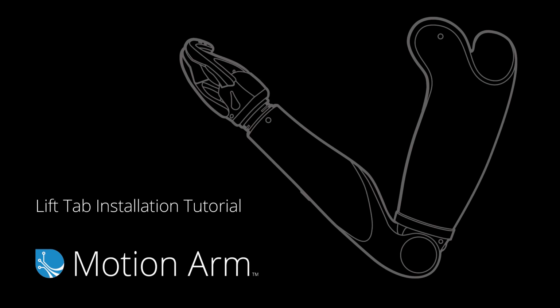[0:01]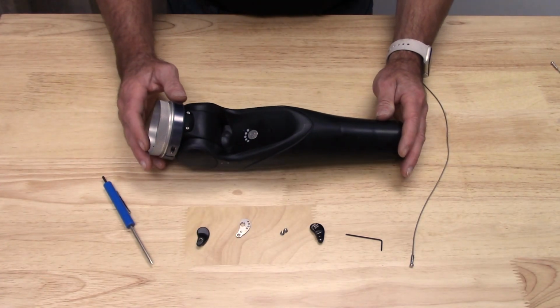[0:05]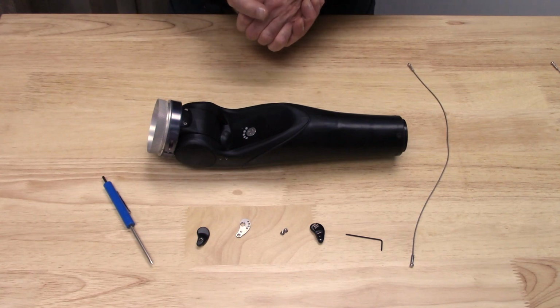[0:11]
Now I'm going to demonstrate installing the lift tab kit onto the motion arm. Just like the elbows, when you get the lift tab kit, it's going to be ready to go for left or right elbows, and that will determine which cover you use.
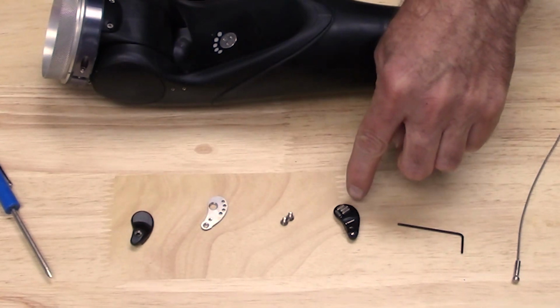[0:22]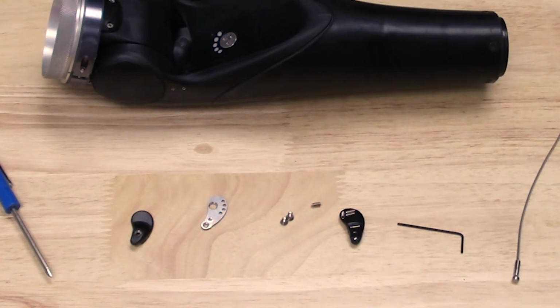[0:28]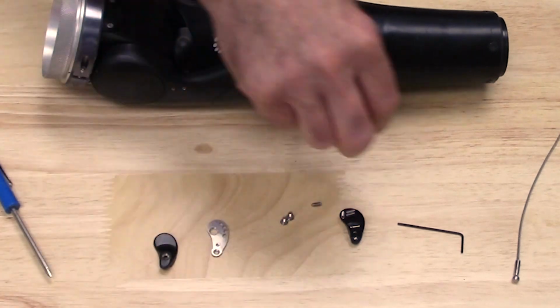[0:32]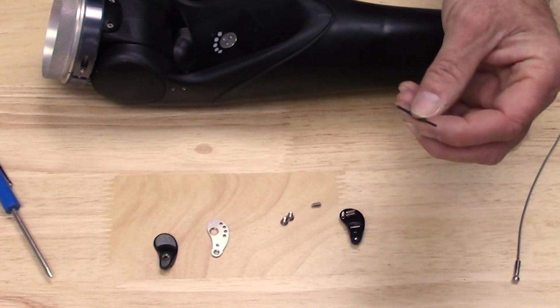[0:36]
In the kit, there's going to be five of these little set screws. There's going to be two Phillips head screws. And then you're going to have the rest of the lift tab assembly here. It's also going to come with the installation wrench for those set screws.
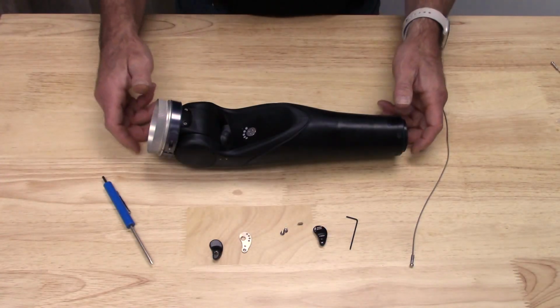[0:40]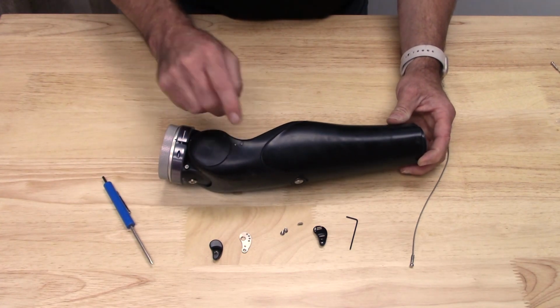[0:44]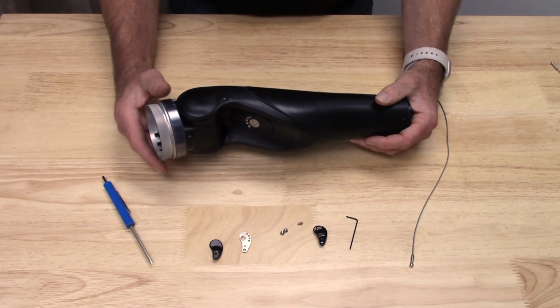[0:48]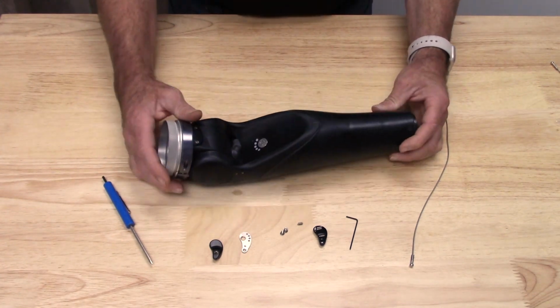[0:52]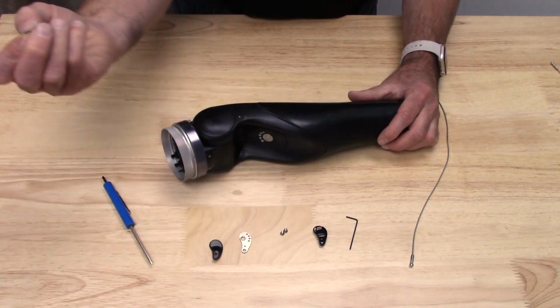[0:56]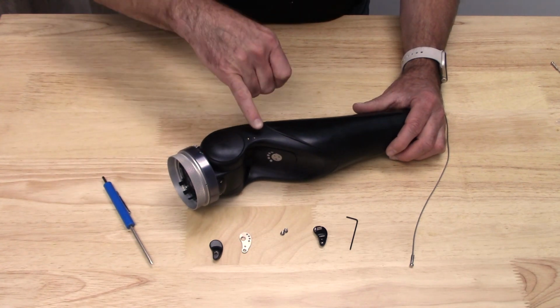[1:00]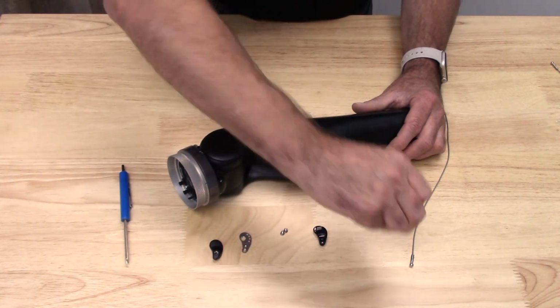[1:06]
If you look at the motion arm, you see two holes on the left, two holes on the right. Today we are going to set this up as a left motion arm. First thing I'm going to do is take one of my set screws, and I'm just going to set it right here on the left side of that elbow. I'm going to grab my little wrench.
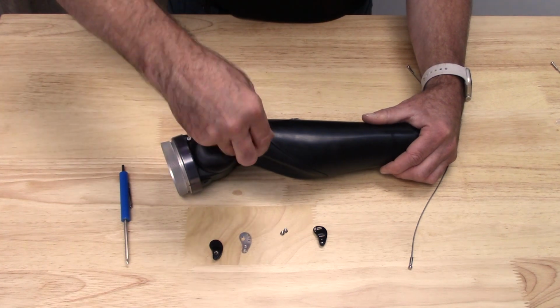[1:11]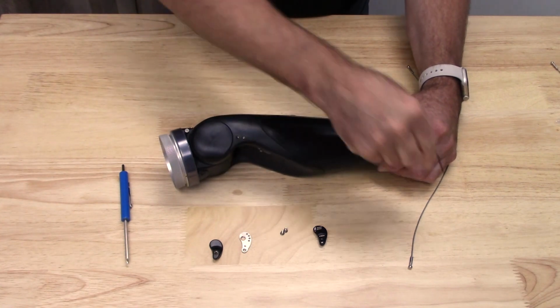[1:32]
And I'm simply going to turn this screw in, again clockwise. What I want to do here is take this completely flush with the outer portion of that elbow. Okay, so I've got that nice and flush. So it's definitely below that surface.
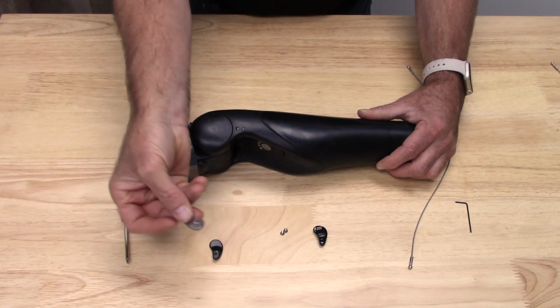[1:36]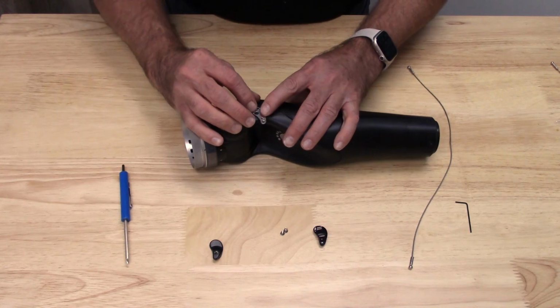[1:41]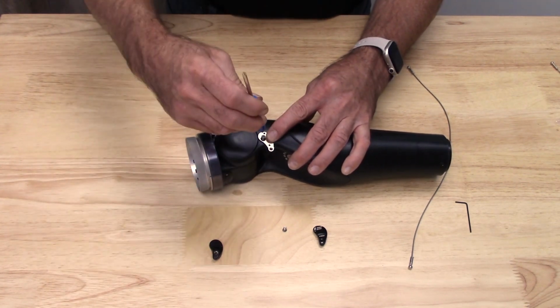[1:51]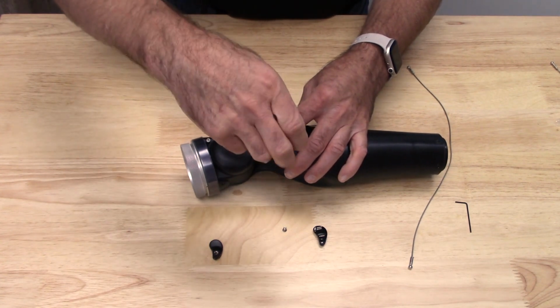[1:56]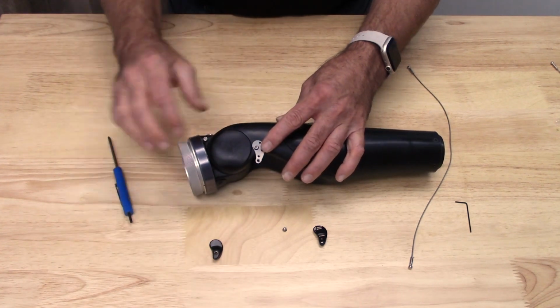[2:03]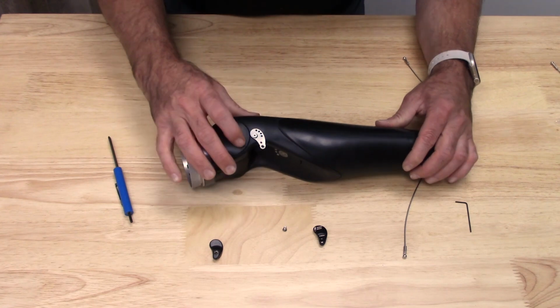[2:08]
Then I'm going to take this part of the lift tab and set it over here. And I'm going to take one of my Phillips screws and screw this in. Again, I'm not trying to tighten this down. I'm not even snugging it down. This is just going to hold that in place while I determine my lift tab angle and direction of
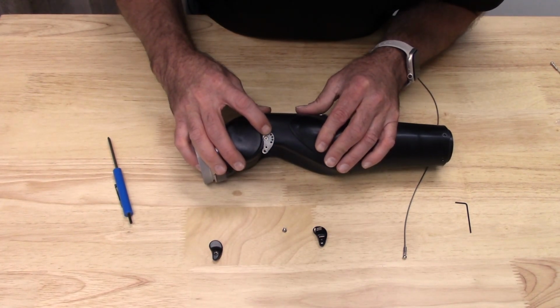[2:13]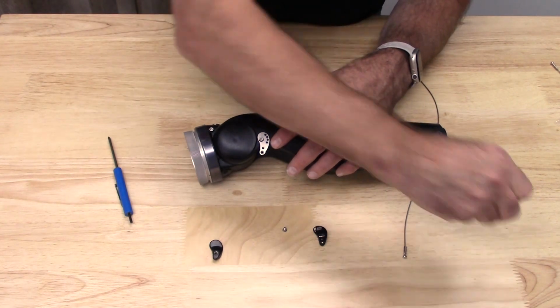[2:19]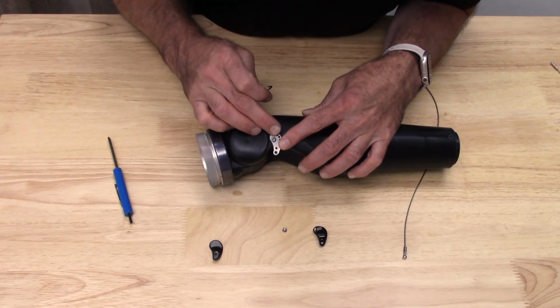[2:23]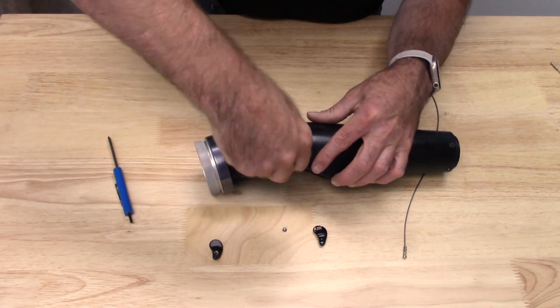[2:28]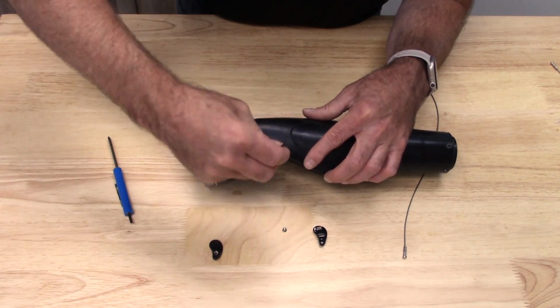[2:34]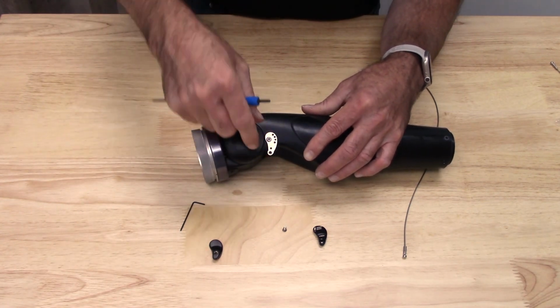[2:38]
pull. And if you're looking here, you see these holes are going to line up with that set screw that I've already screwed in. Once I determine my angle here, then I'm going to back that set screw out. And the reason I'm doing that, again, is so that lift tab doesn't move. So I back that screw out just enough.
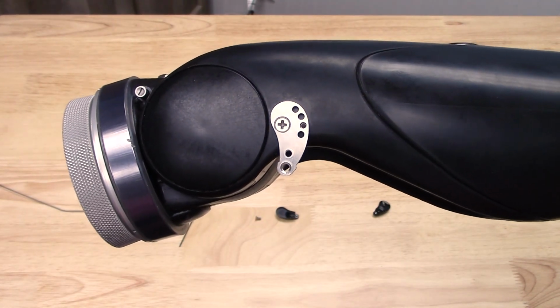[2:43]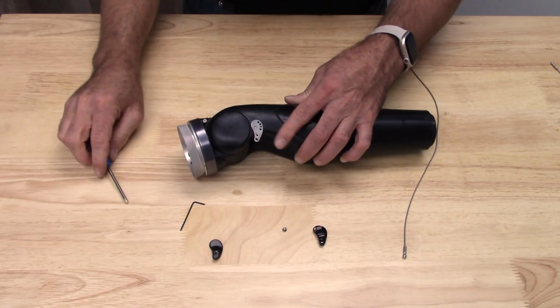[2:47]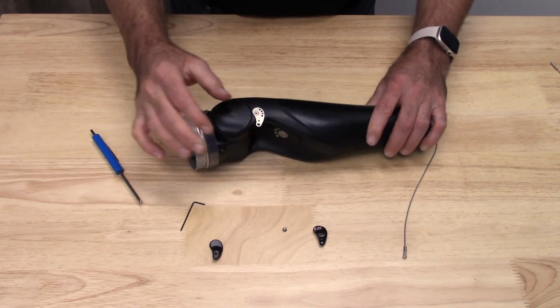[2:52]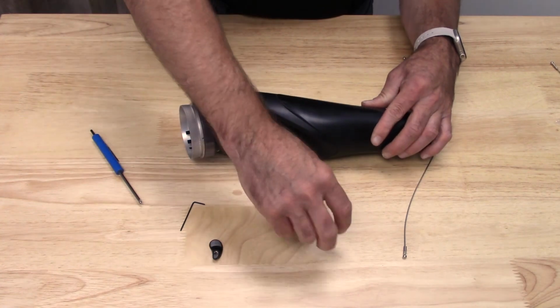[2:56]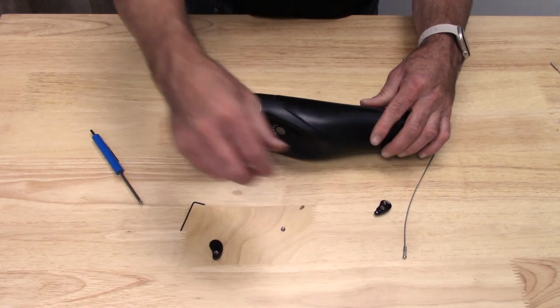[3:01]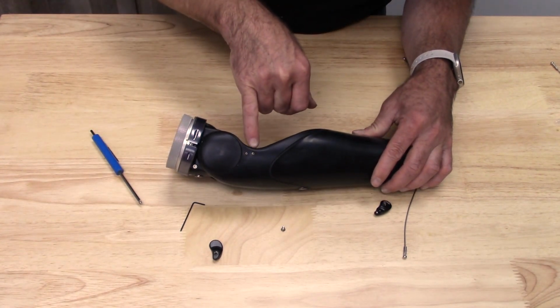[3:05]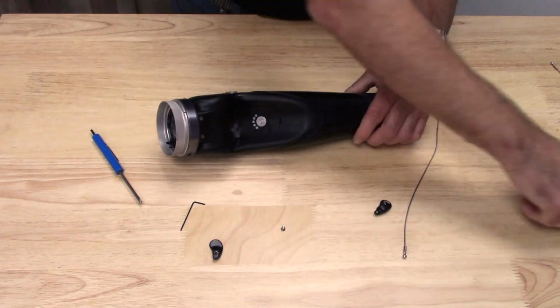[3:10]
And again, you can see where that should sit in the assembly. Once I'm done with that, then I am going to tighten down that screw. Okay. Everything's there, nice and flush in the right place. You notice I have several other set screws here. On this one, you can see on my elbow here, I just filled in those other holes on the other side with those. Nice way to have some extra screws handy.
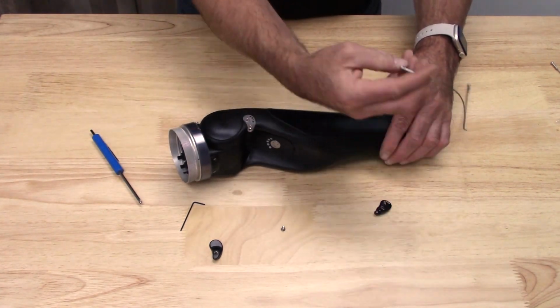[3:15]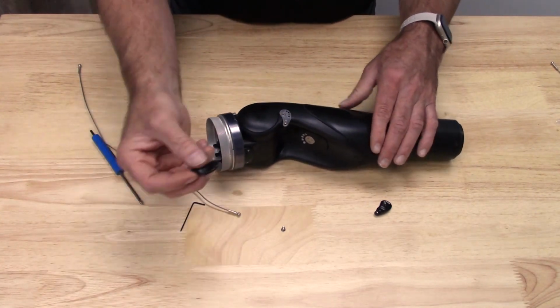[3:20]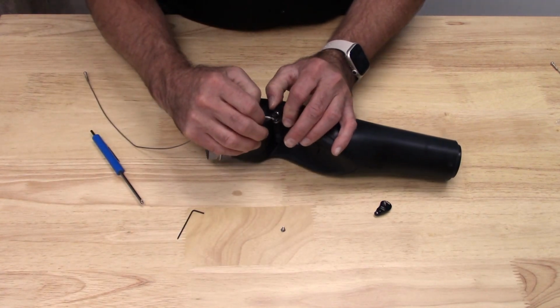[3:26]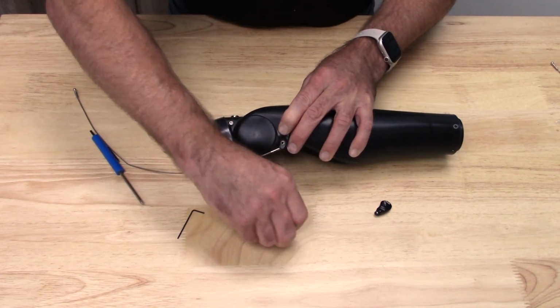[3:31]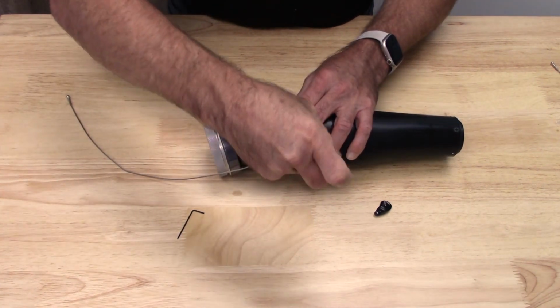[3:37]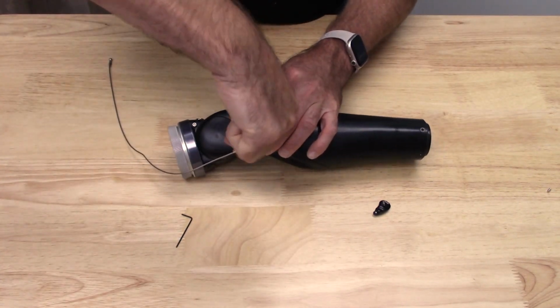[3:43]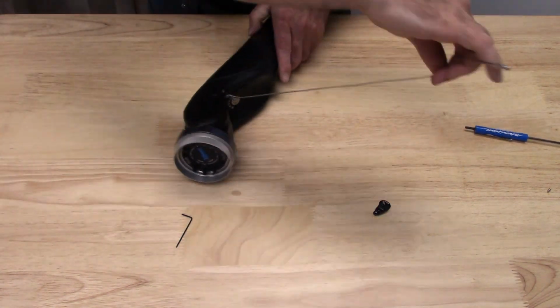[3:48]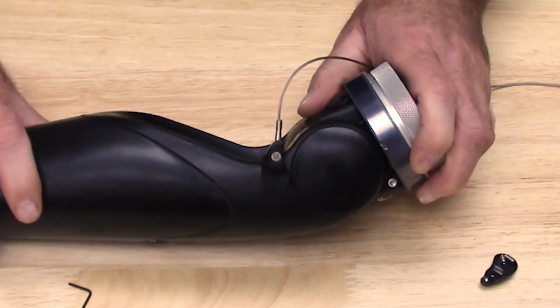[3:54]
Next thing I'm going to do is grab my ball terminal here, and I'm going to grab my lift tab assembly cover. Like that. Now I'm just going to secure everything down with that second Phillips head screw. Just make sure everything's nice and tightened down there. That is what a properly installed lift tab assembly will look like.